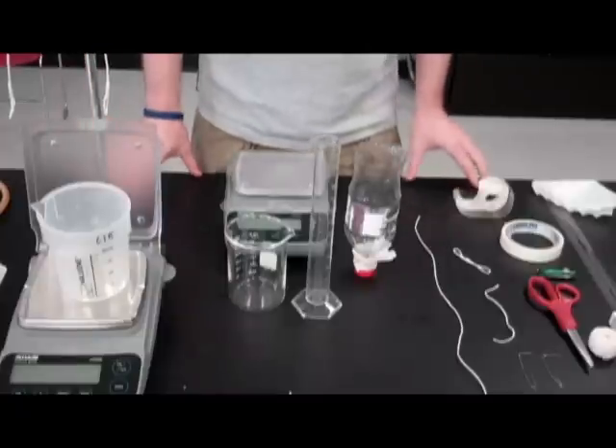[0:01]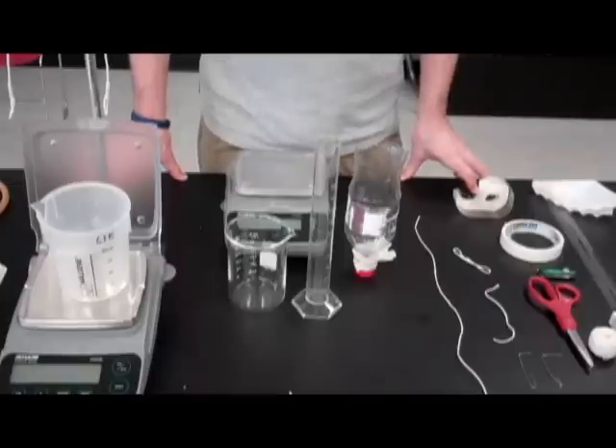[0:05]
Hey everyone, this is Michael Ralph, and today we're talking enzyme digestion lab, specifically the Pectinase lab, where we're going to be digesting applesauce with pectinase enzyme.
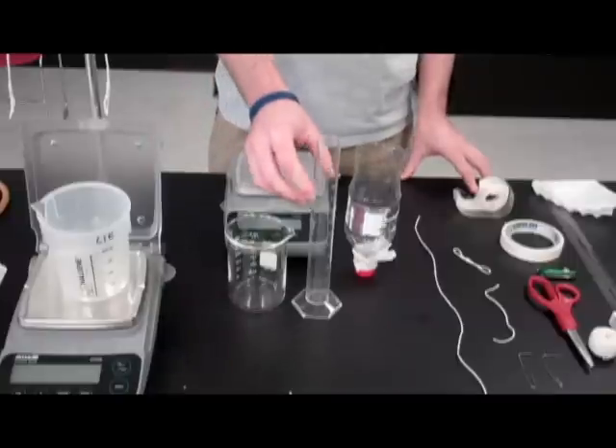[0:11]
This is most traditionally done by volume. You compare a before and after volume of both a control sample, which is untreated, and an experimental sample, which is treated with pectinase, presumably to harvest significantly more juice. Today I'm going to show you how you can also compare before and after masses.
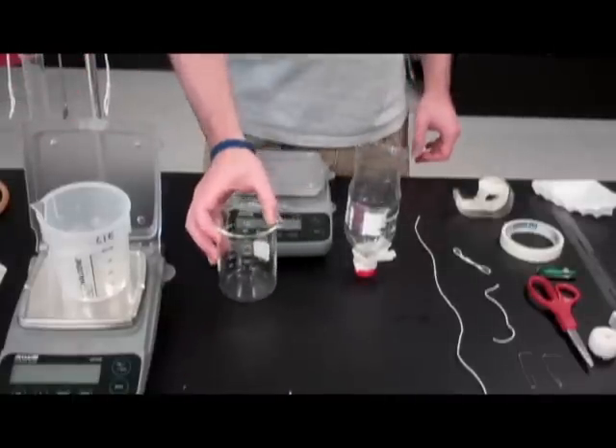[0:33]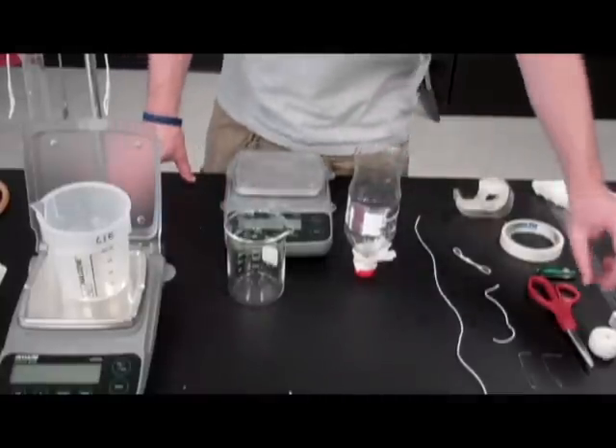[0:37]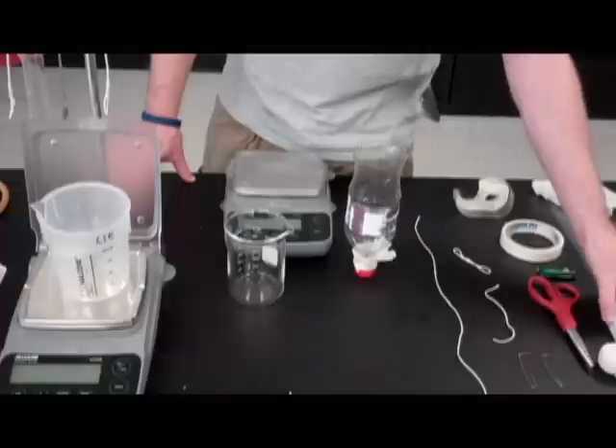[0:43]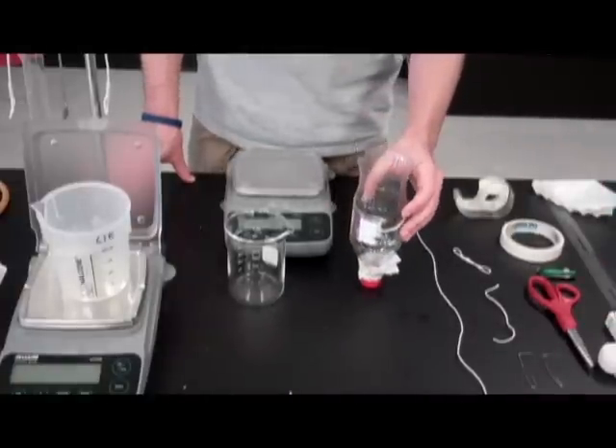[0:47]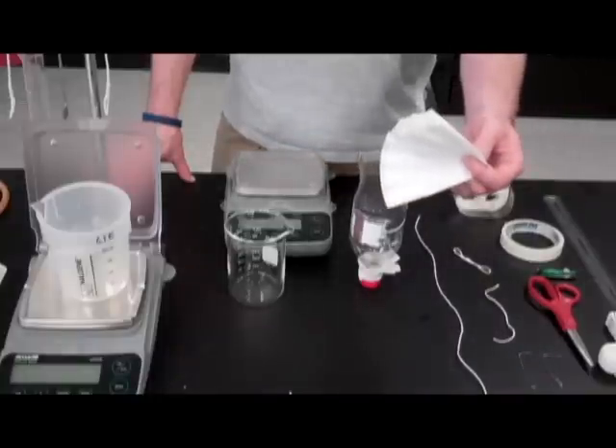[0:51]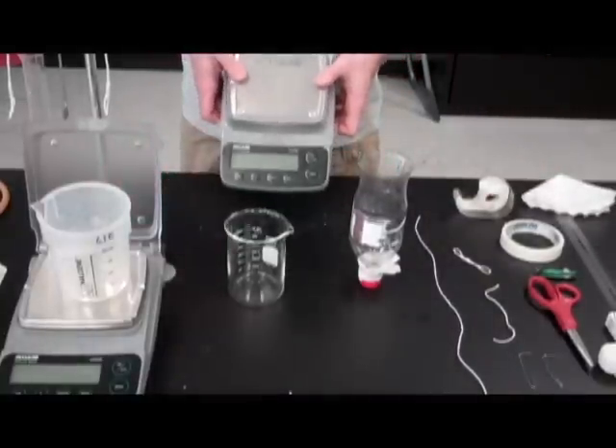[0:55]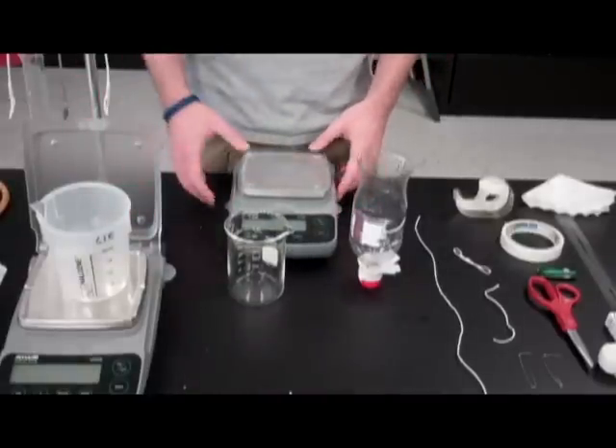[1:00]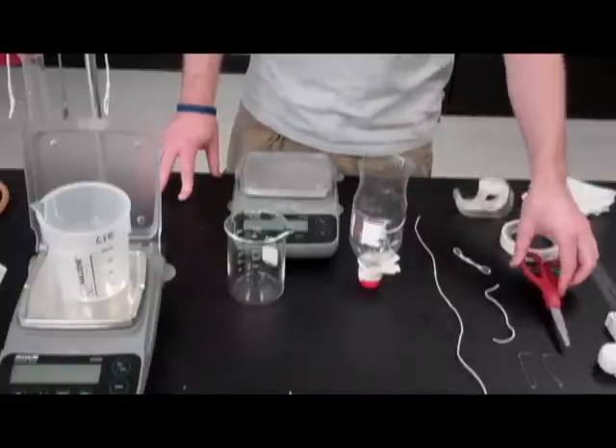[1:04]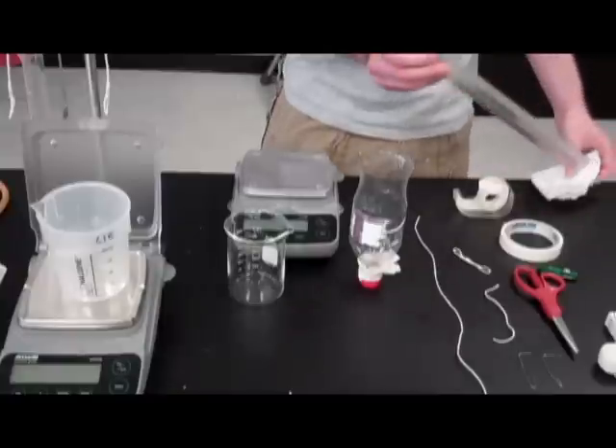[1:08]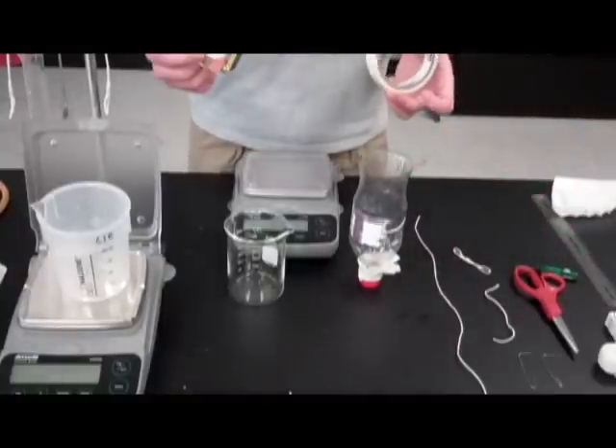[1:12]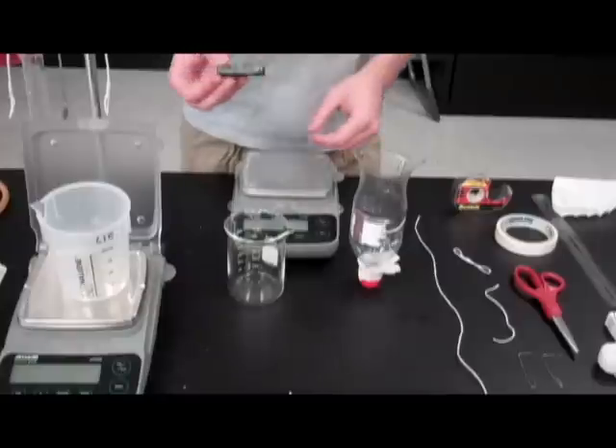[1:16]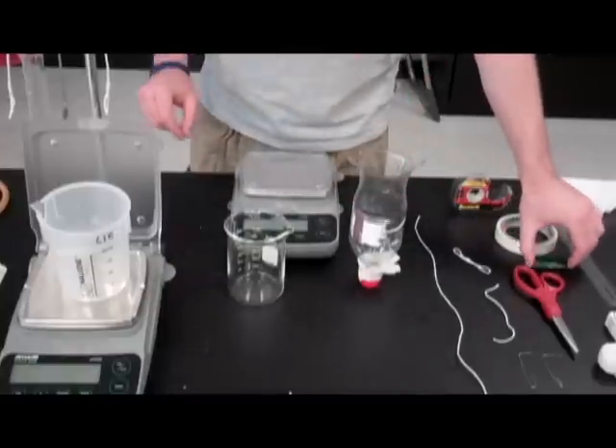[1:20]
The first thing you need to do is get together some materials. What we're going to be using is some twine, some paper clips, a pop bottle, 20 ounces preferably, some coffee filter paper, and you'll also need a scale and ring stand apparatus. Some other things that will be useful while we're constructing this would be some scissors, a ruler, two kinds of tape, masking tape and scotch tape, and preferably something sharp because we're going to be making some punctures in our pop bottle.
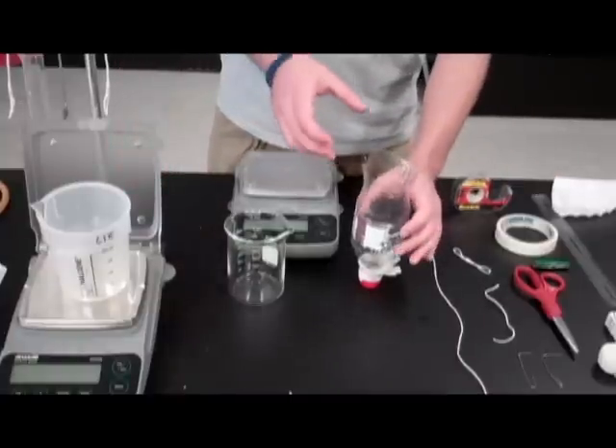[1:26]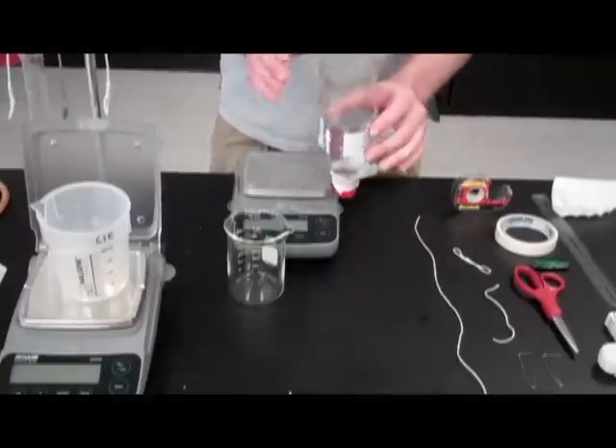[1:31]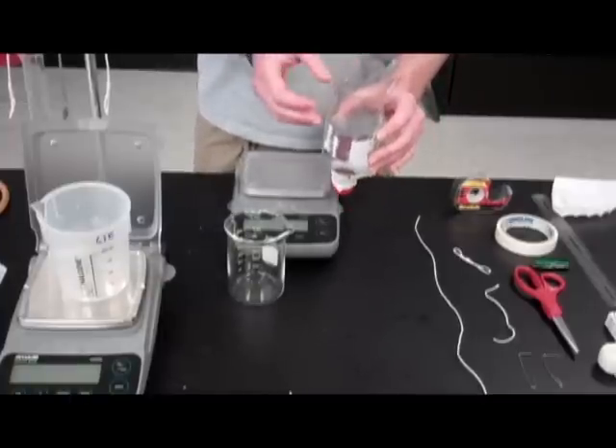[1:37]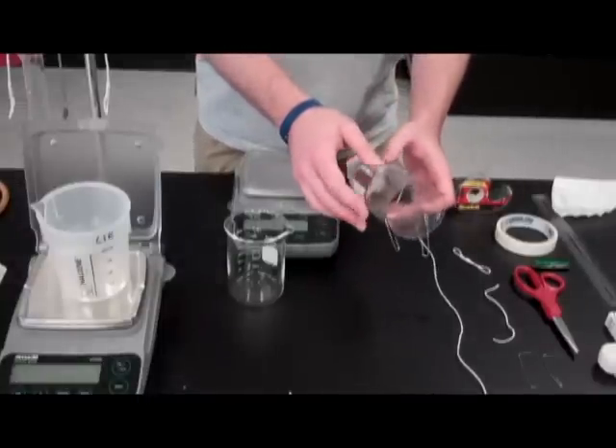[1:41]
The first thing we're going to need to do is make our reaction vessel. So take your 20-ounce pop bottle and you're going to need to cut the bottom off. Cut it as low as you can, but you still need a nice even top. Once you make that cut, we're going to make three punctures, evenly spaced
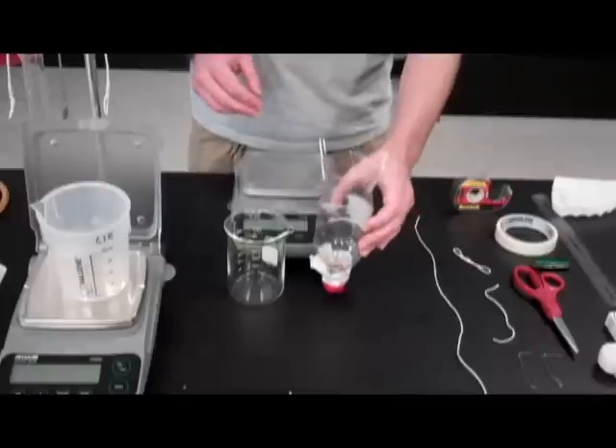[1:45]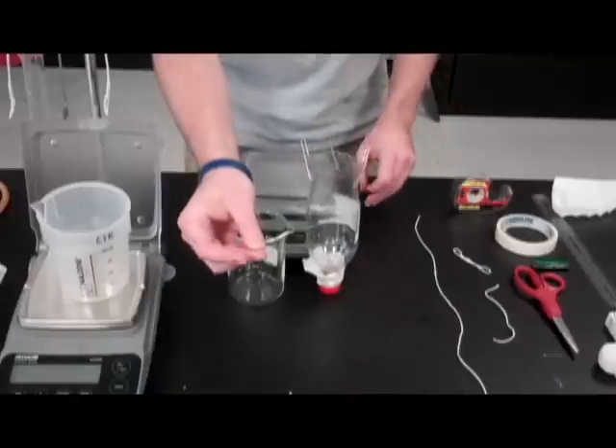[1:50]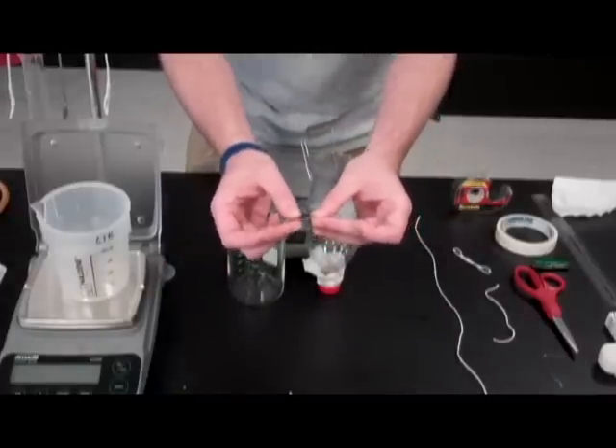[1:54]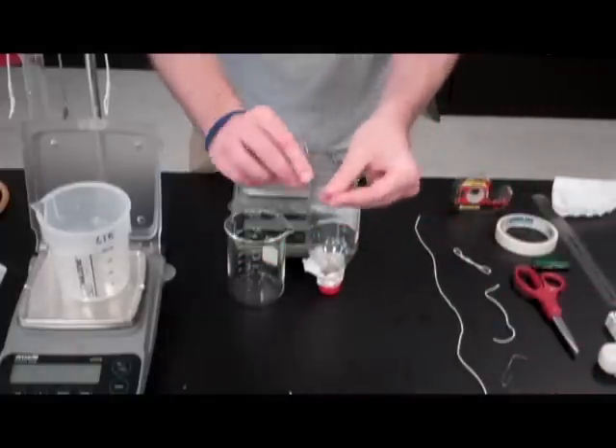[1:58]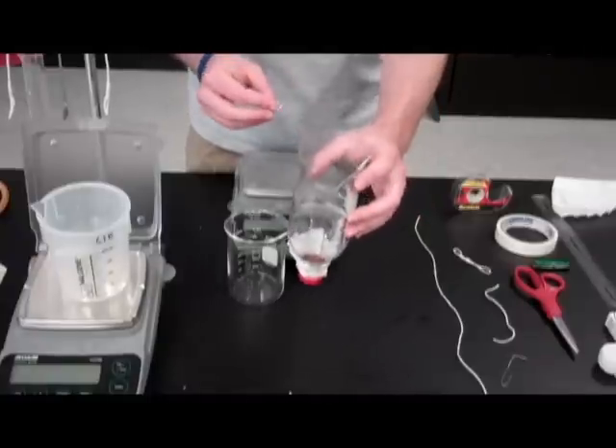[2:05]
around our pop bottle. And we're going to take some paper clips and fold them into what's ready to become a hook. You can see one end is flattened and one end still has its hook shape. Take the flat end and force it through that puncture and push it up against the wall. Do that for each of our three punctures and you'll have three hooks ready to suspend our reaction vessel.
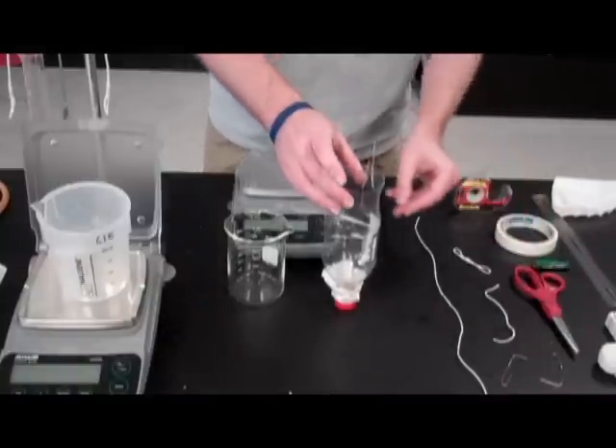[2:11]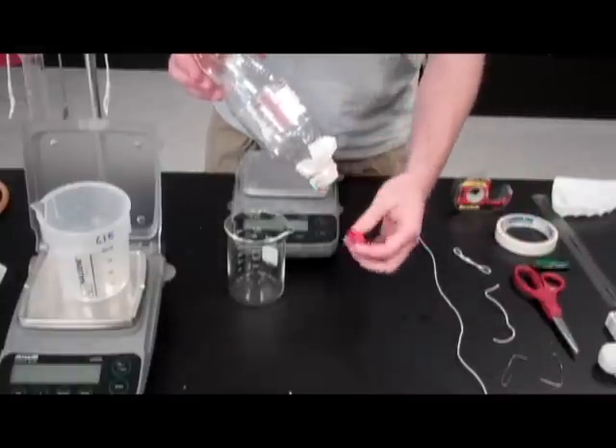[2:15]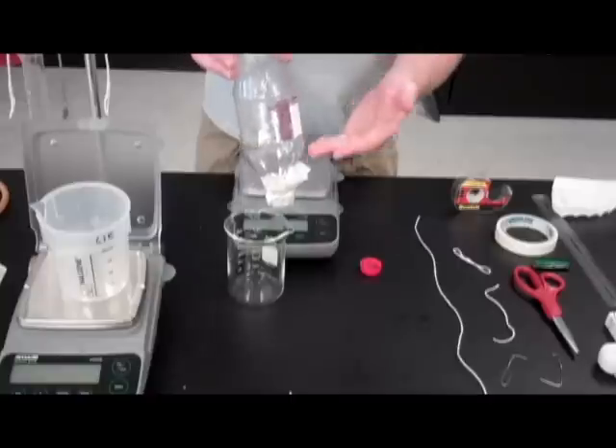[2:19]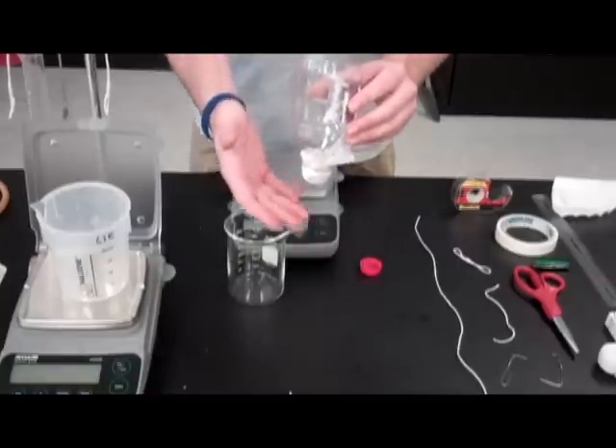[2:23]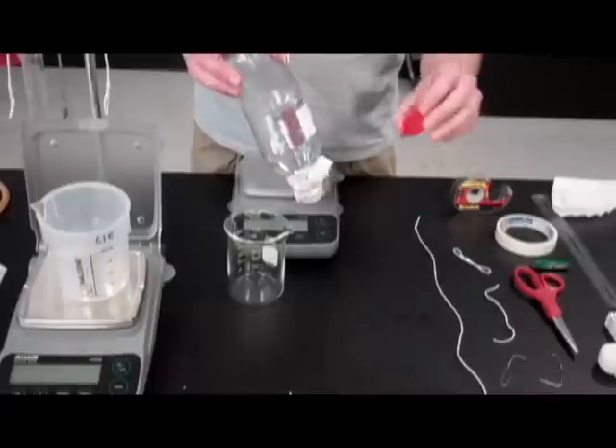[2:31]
On the other end, take your coffee filter paper and use a rubber band to attach it to the bottom. That's going to hold all of our undigested sample in the reaction chamber but allow the juice to flow out. I recommend using a rubber band because this is going to need to be replaced frequently throughout the course of the lab. Make sure you hold on to the cap to keep this covered until we're ready.
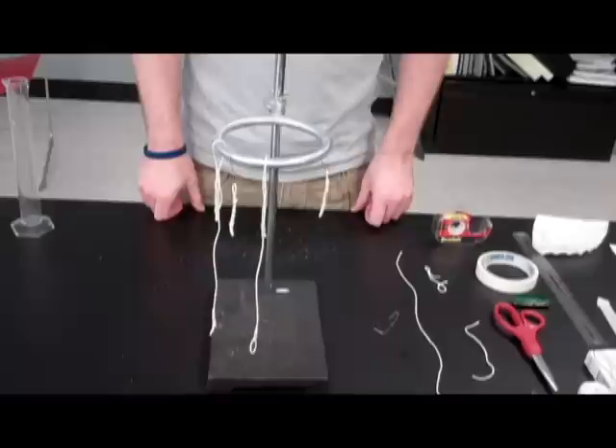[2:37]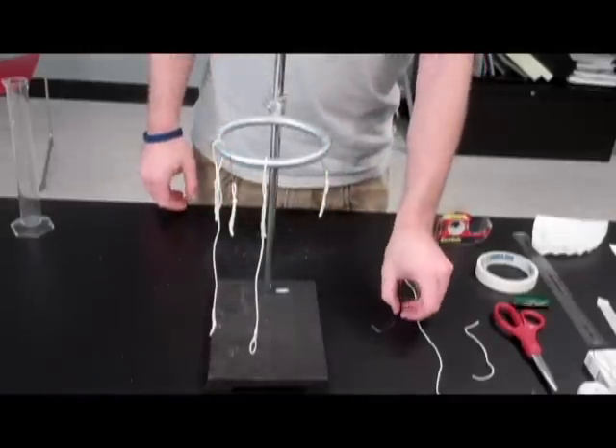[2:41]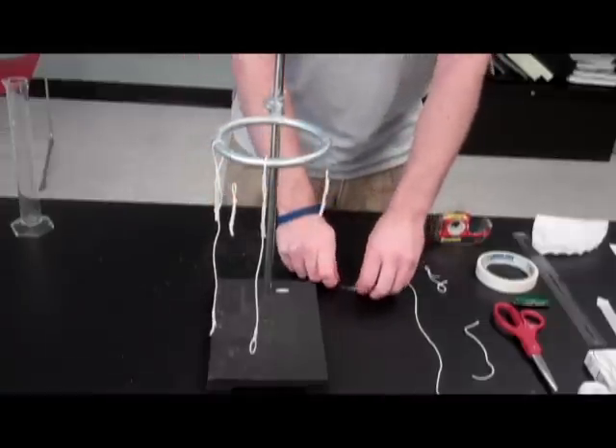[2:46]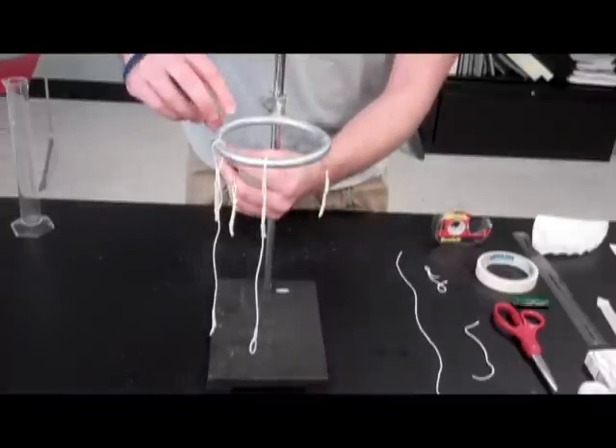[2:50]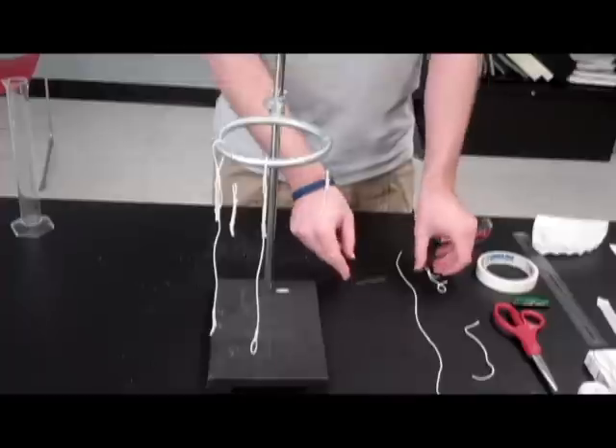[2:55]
Next up is the ring apparatus. The first thing you're going to need to do is get a ring stand and attach a ring to it. To that ring, you're going to need to hang three paperclip hooks. So take the straight end and bend them over the top. Make sure they're nice and locked, leaving the hook dangling underneath.
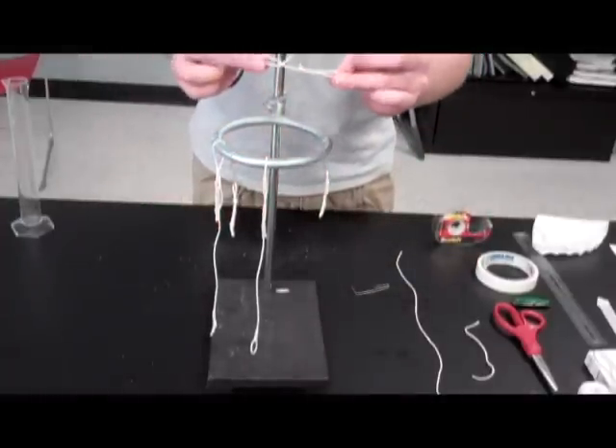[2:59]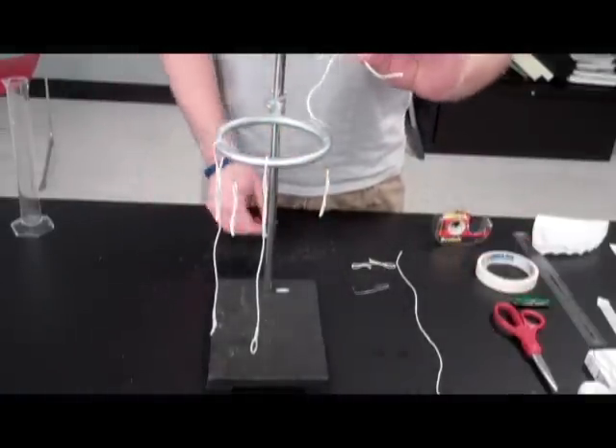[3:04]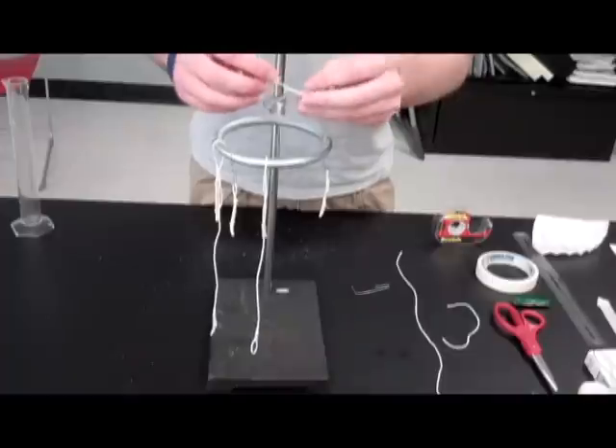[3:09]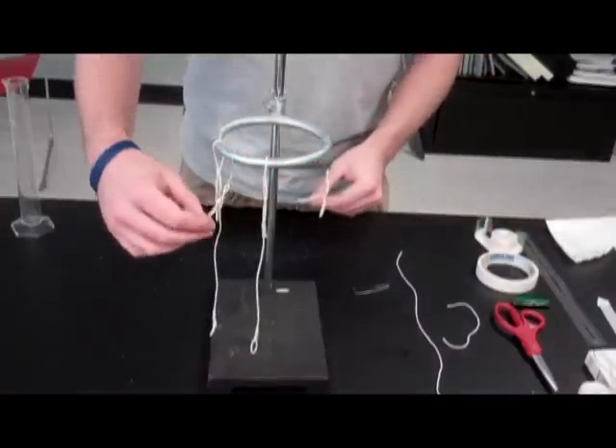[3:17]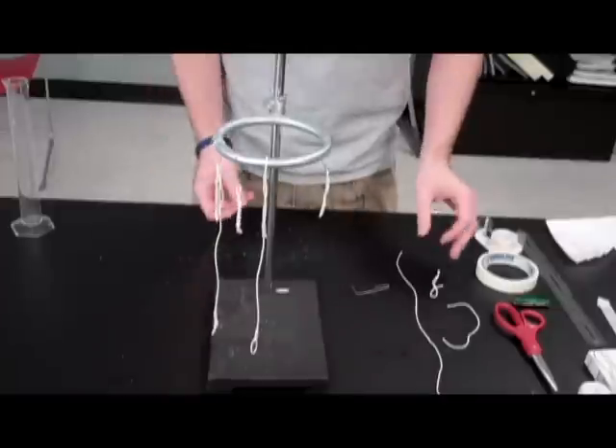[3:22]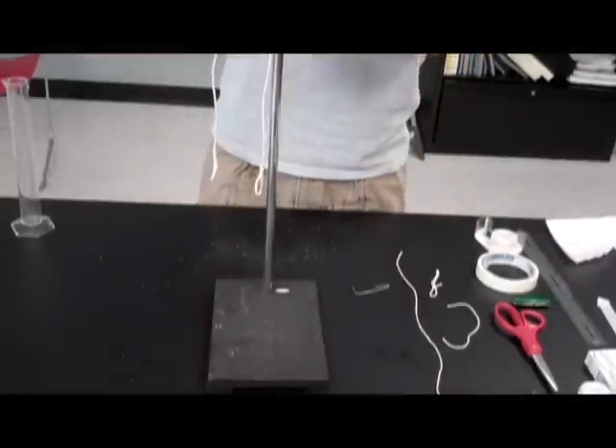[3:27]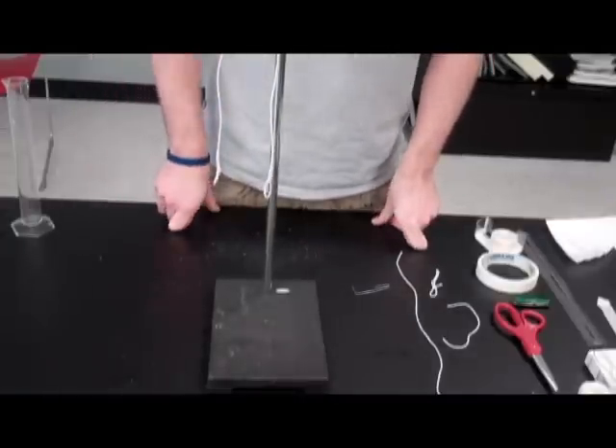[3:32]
For each of the three hooks, you're going to need one length of twine, and you're going to tie it into a double loop. So take about 20 centimeters of twine, about like this, and tie a loop in each end. I would recommend, after you've tied the loop, to tape down those loose ends with some scotch tape, as you can see I've done here. That'll ensure they don't come undone during the procedure. When each of those is suspended from the paperclip hook, you can raise it up, and it's now ready to be moved over and begin putting together the rest of the apparatus.
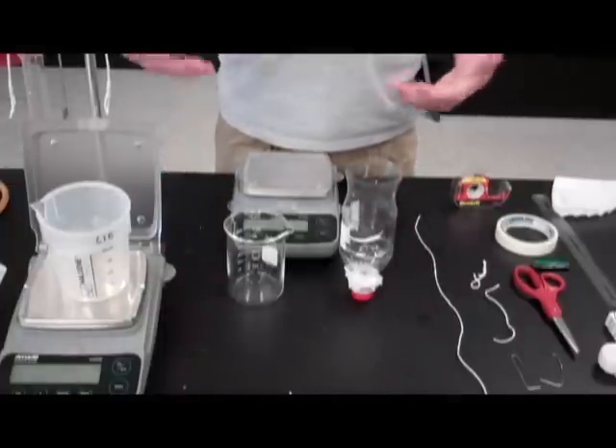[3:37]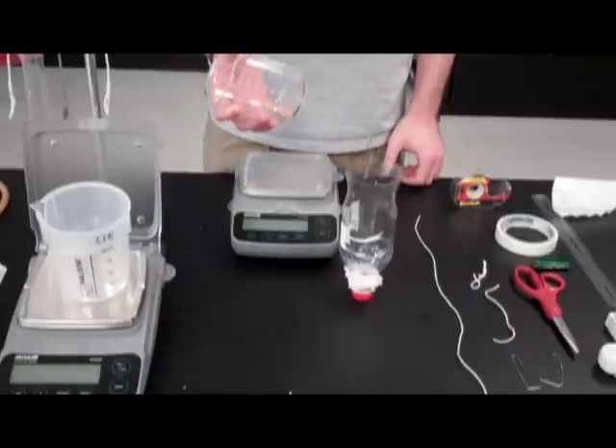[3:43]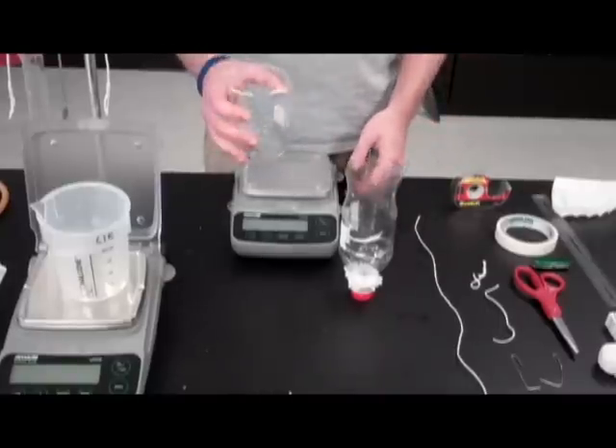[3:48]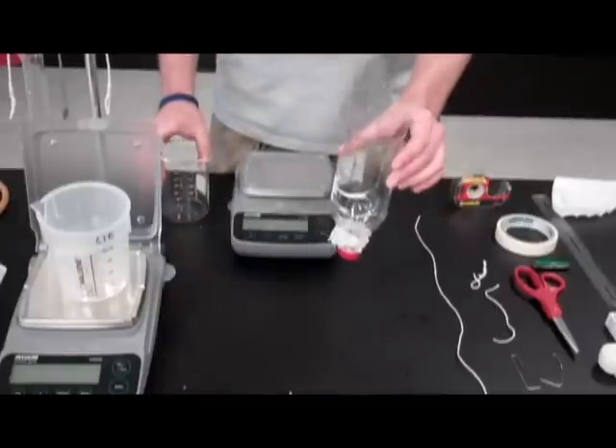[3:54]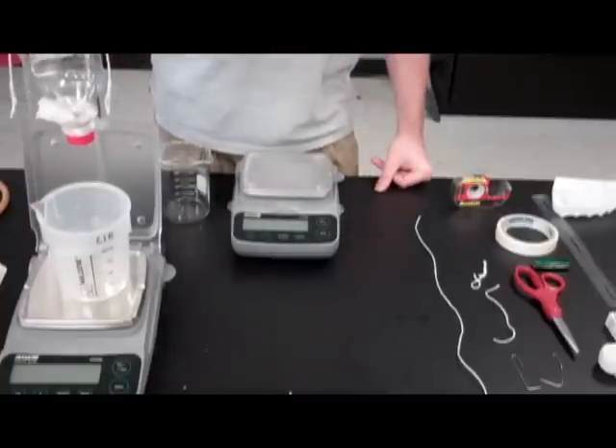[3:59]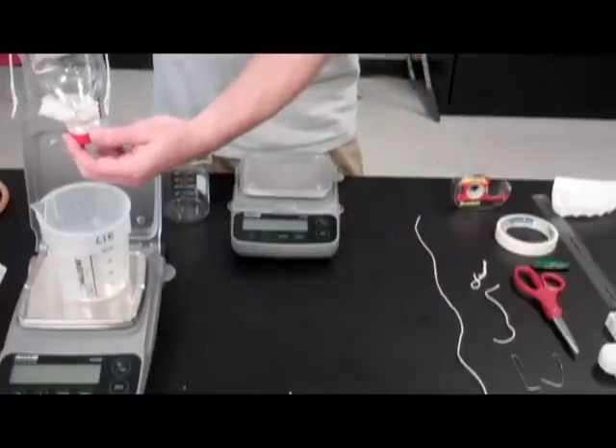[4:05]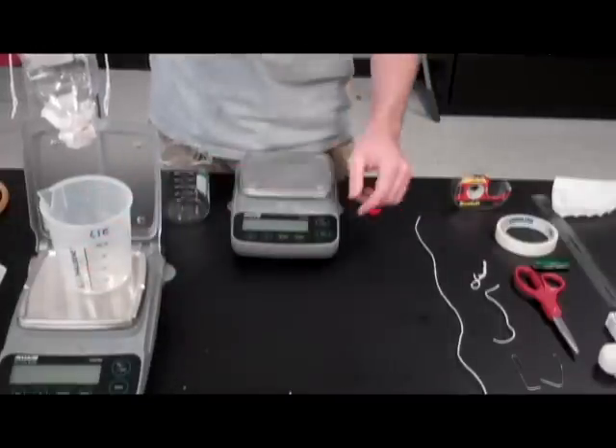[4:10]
Finally, once you're ready to actually do the procedure, you're going to want to mass a beaker and then load it with a determined sample of applesauce. I'd recommend something even like 100 grams on your scale. Once it's loaded, you can load it into the reaction chamber and suspend the reaction chamber from our ring so that it's ready to begin running once we're ready. When you're ready to proceed, undo the cap and the juice will begin to drain into our harvesting vessel, which is also on a scale, to begin taking measurements.
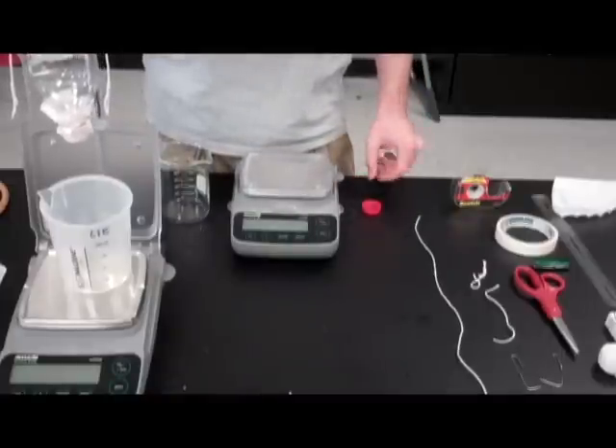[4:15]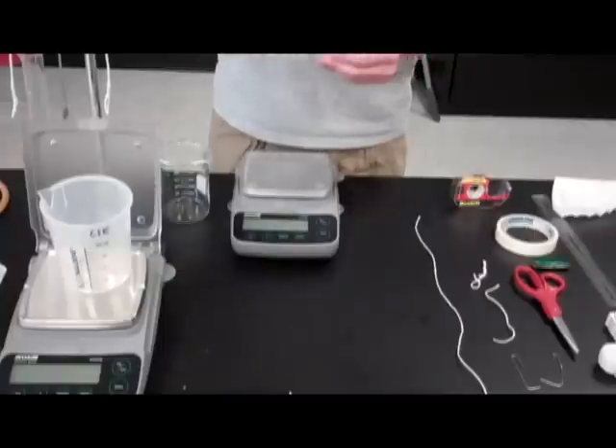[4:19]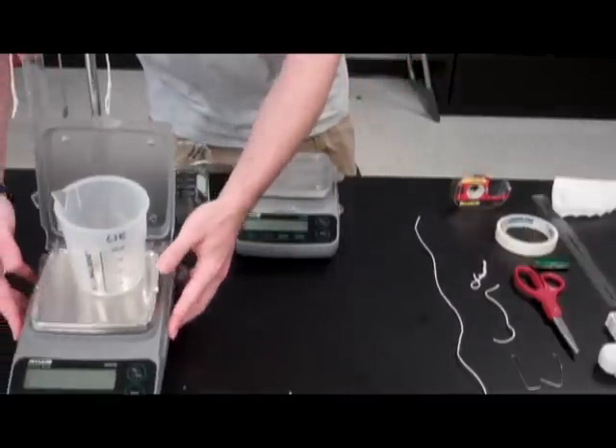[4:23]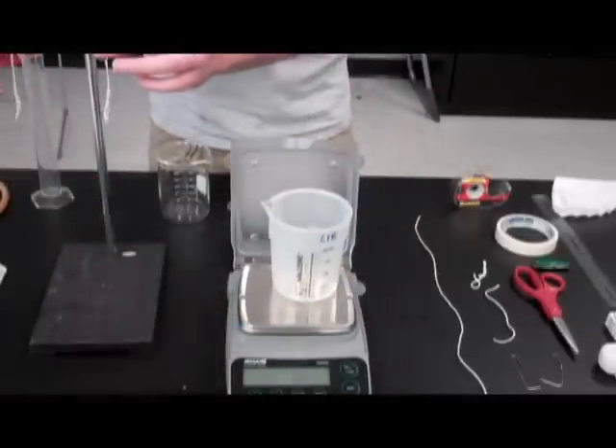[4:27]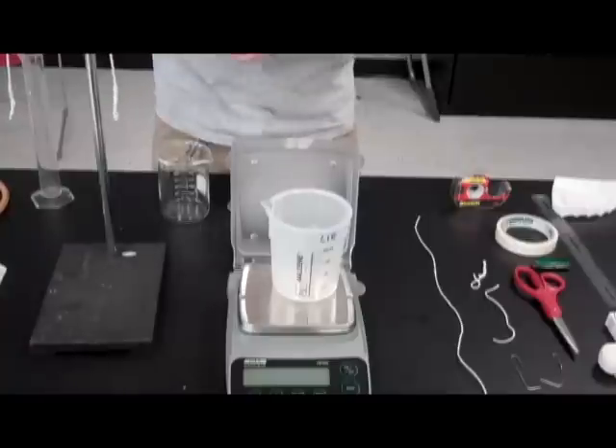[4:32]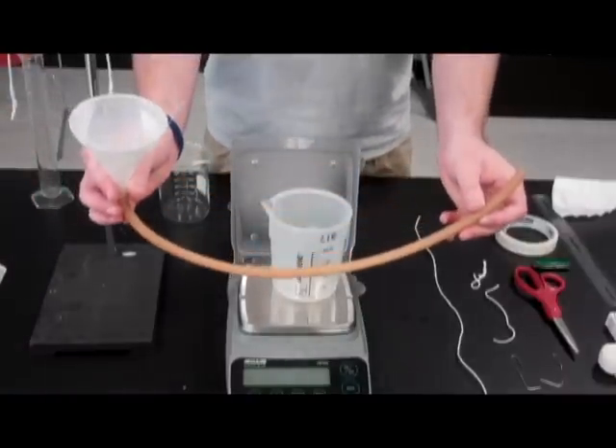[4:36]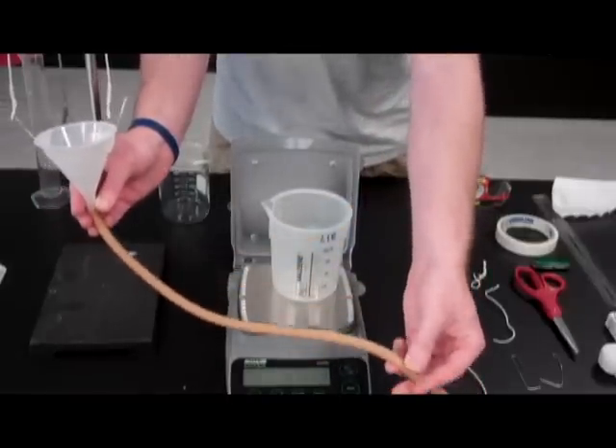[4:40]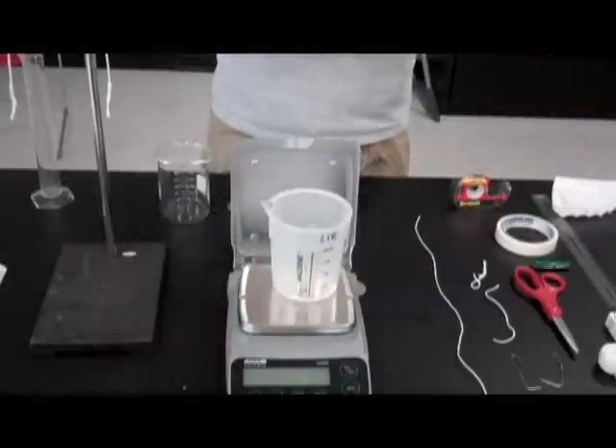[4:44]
If there's not enough room on your ring stand for all this to be happening all at once, you can move the scale to another location, and using two more lengths of twine, these are both 45 centimeters long, you can hang a funnel and tube system underneath the reaction vessel and place your harvesting beaker elsewhere and collect in that manner.